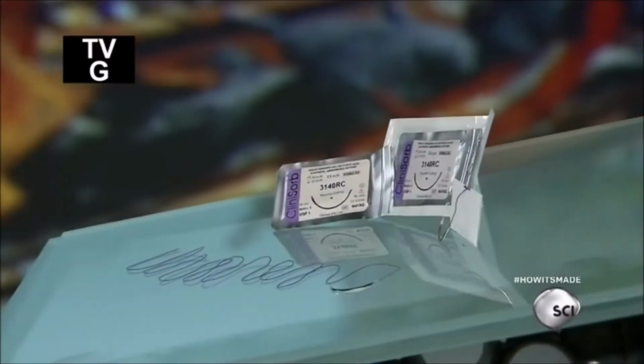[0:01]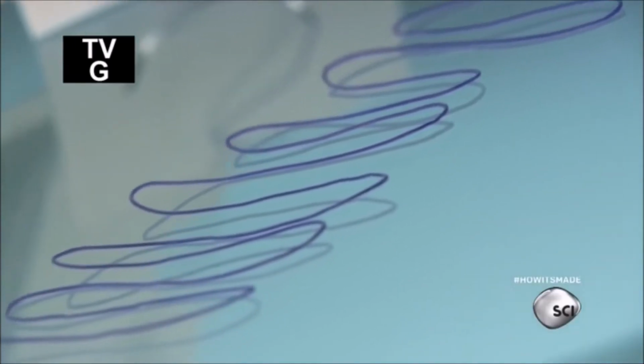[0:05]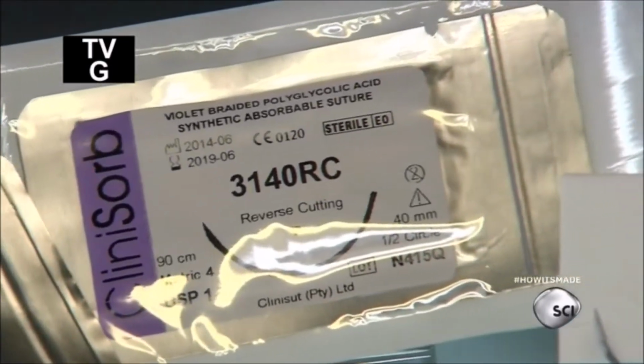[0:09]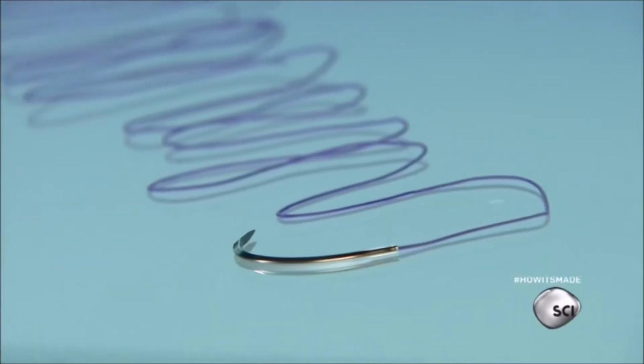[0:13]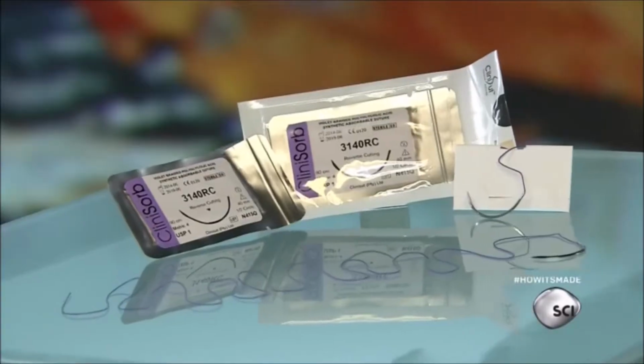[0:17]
Humans have been performing surgery for over 7,000 years, but the use of surgical sutures is fairly recent. Ancient Greek surgeons were thought to be the first. They used gut strings to mend the wounds of gladiators over 2,000 years ago.
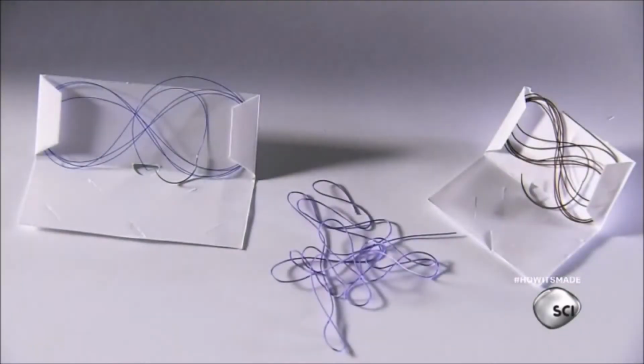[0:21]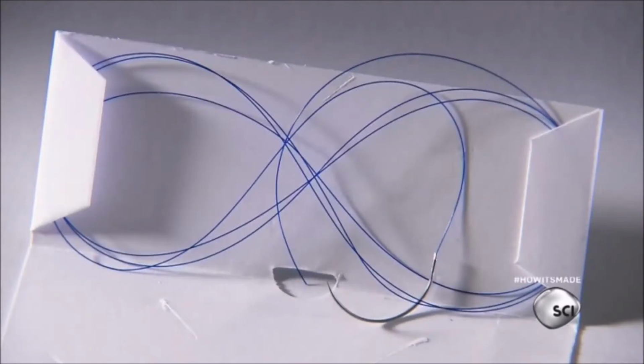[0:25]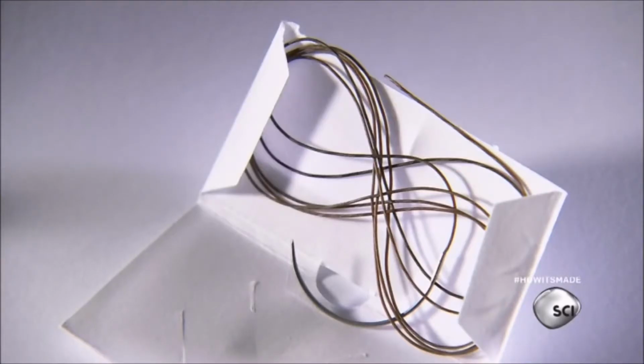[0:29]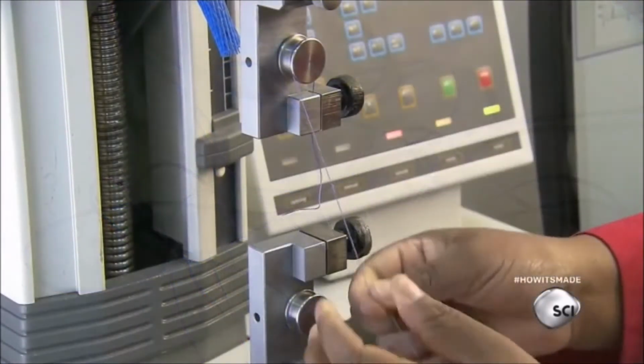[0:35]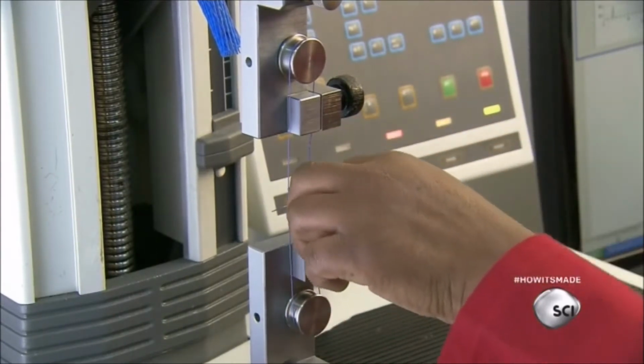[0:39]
Today's medical sutures come in different forms, such as synthetic monofilament threads, natural collagen fibers, or braided synthetic threads. A technician sets a tension meter to check the quality of the raw materials. The machine applies tension on the knot to measure the force needed to break it.
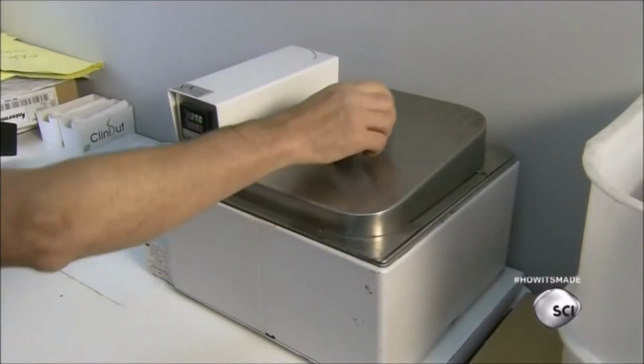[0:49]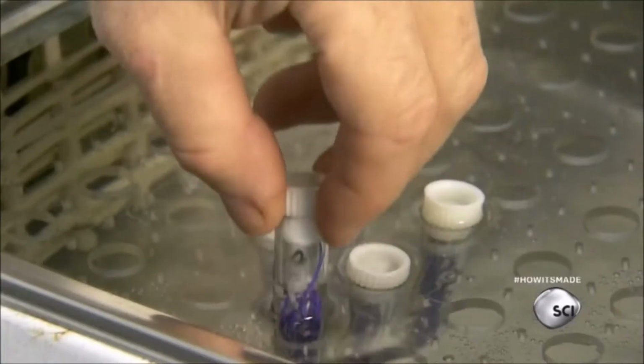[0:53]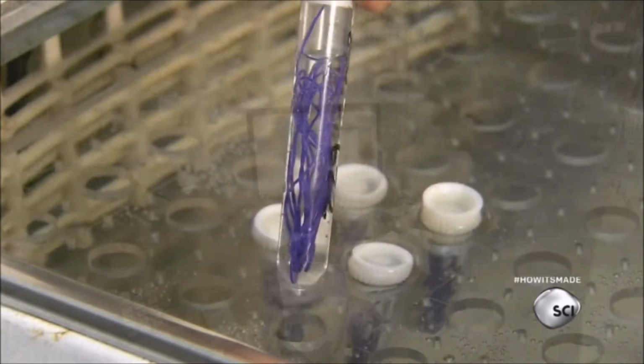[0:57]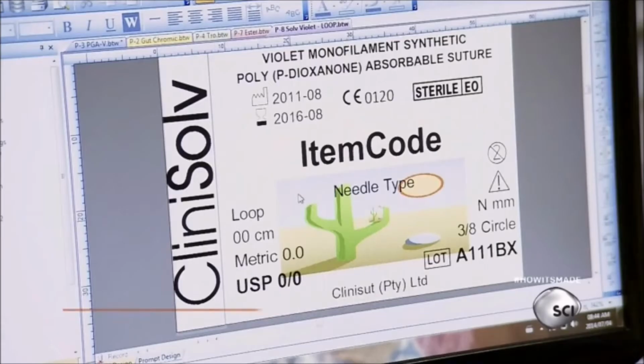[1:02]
A worker tests the material's absorption process in a heated bath. This simulates the temperature and moisture of the human body. A technician enters the product's medical specifications and prints out a batch of labels.
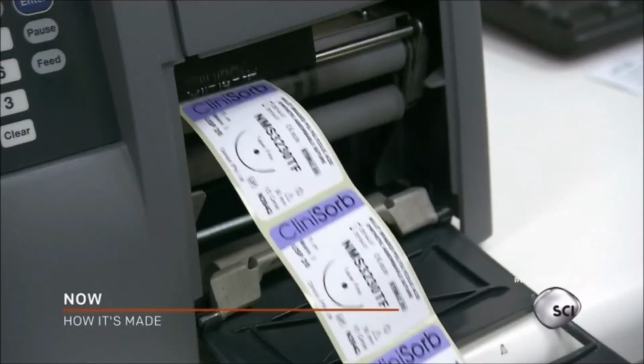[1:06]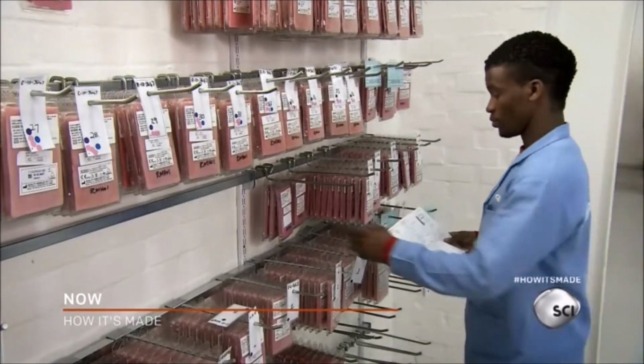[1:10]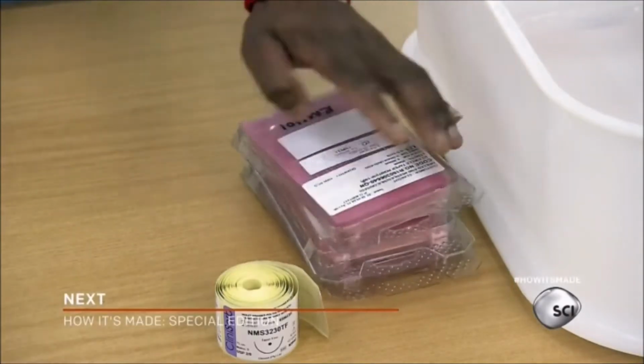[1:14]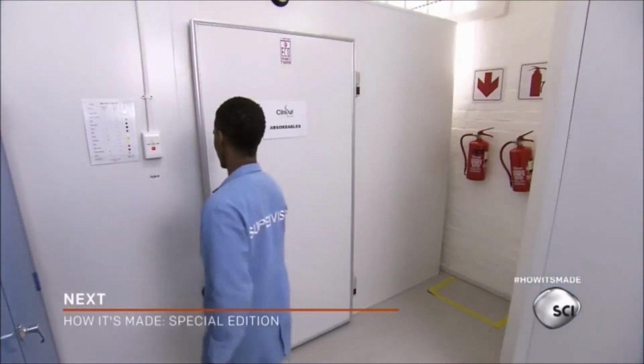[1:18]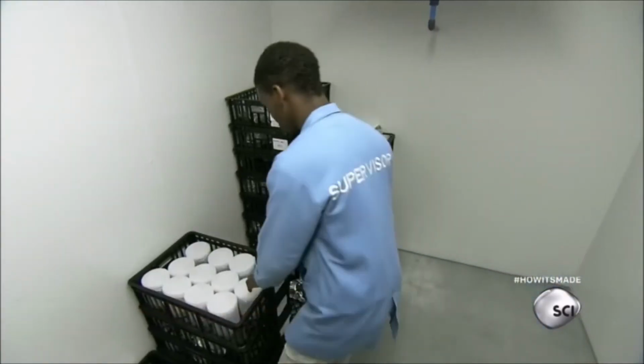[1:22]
Then, a supervisor selects needles and places them on a table. He retrieves spools of thread from a refrigerated room. To preserve the thread, it's been stored in sealed containers.
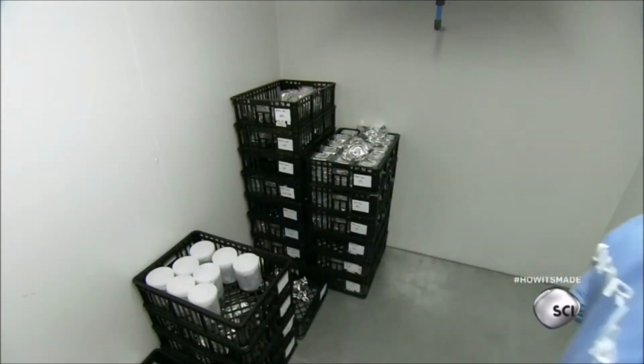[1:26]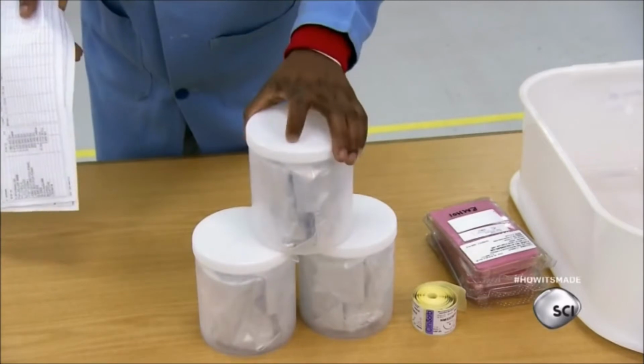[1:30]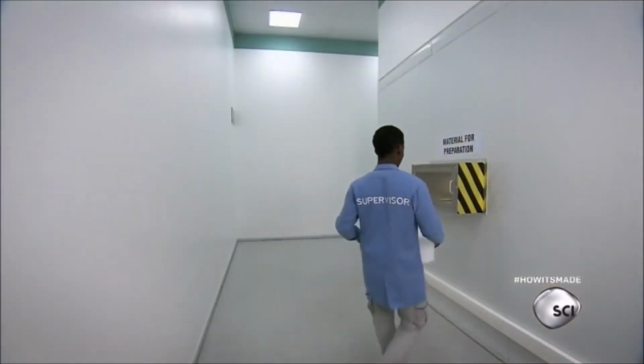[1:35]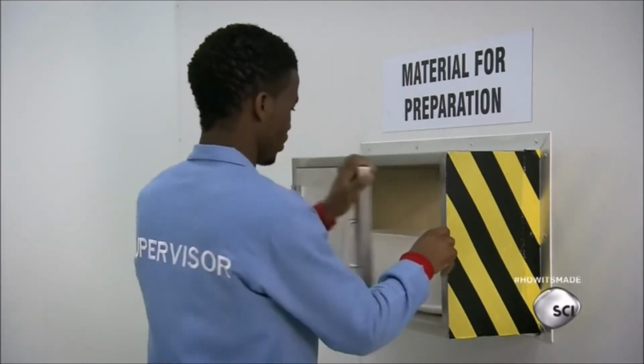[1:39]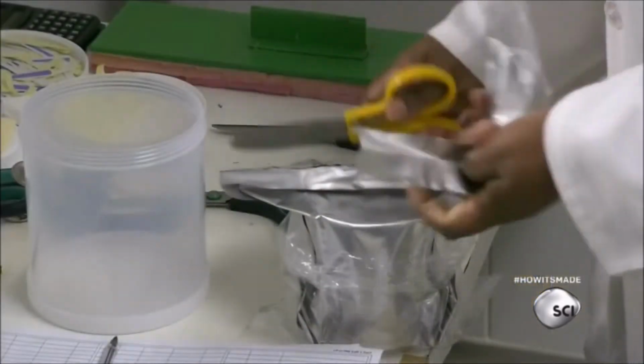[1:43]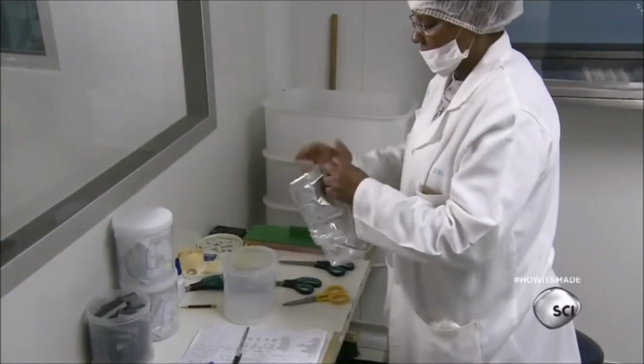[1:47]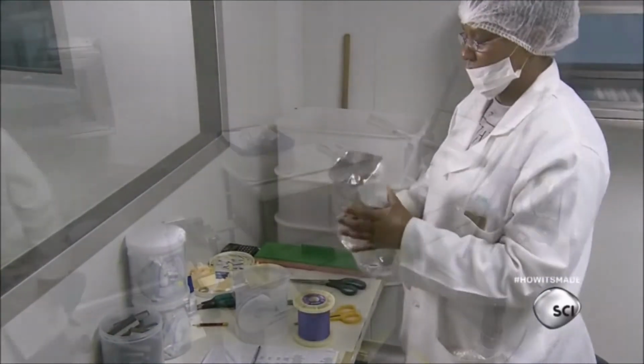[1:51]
The supervisor gathers all the materials and brings them to the material preparation department. The supplies are passed through an airlock to maintain the department's positive pressure environment. On the other side, a technician opens the airtight foil and removes the thread spool. She threads the spool in a custom-made winding and cutting machine.
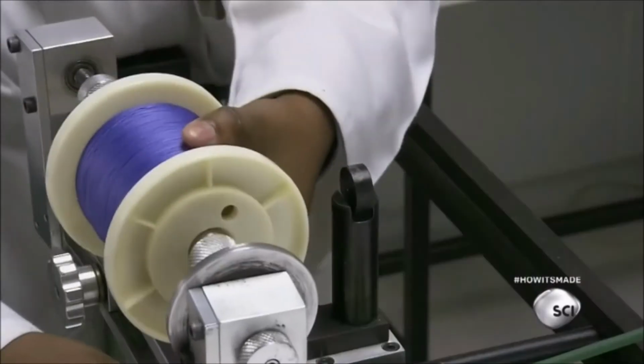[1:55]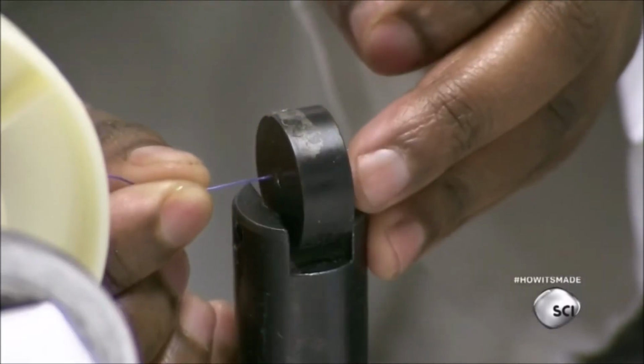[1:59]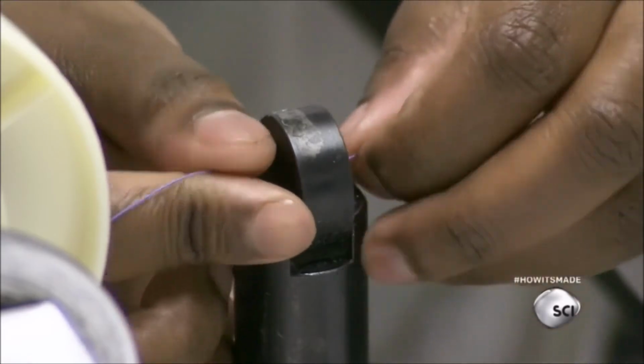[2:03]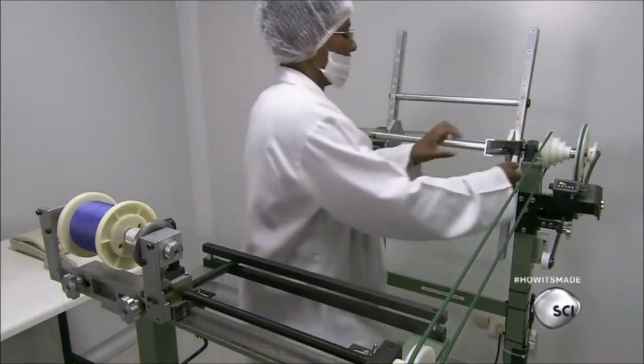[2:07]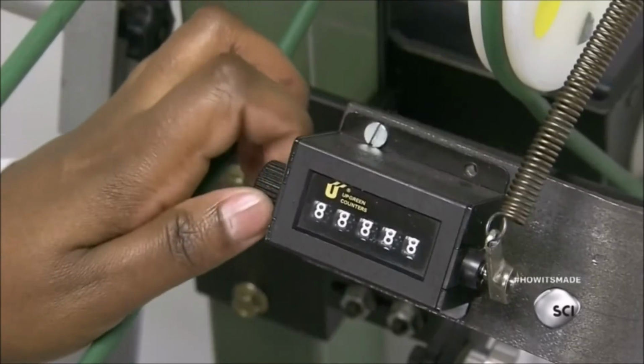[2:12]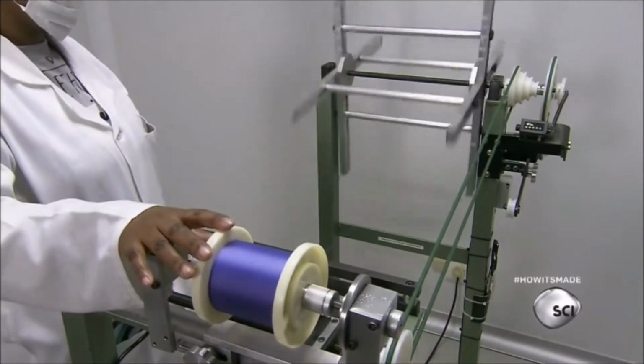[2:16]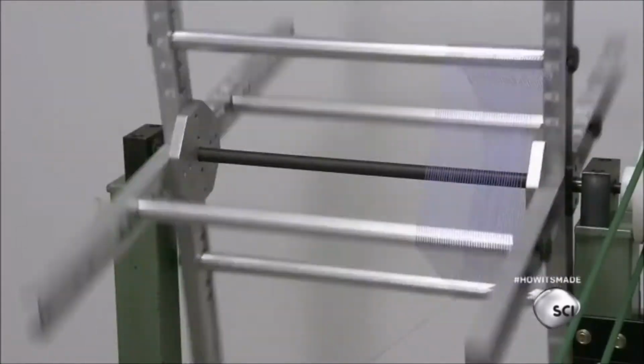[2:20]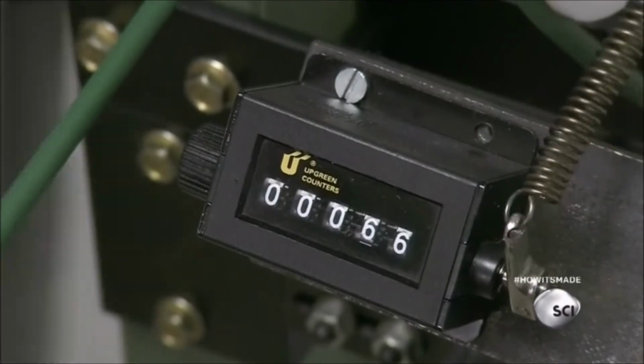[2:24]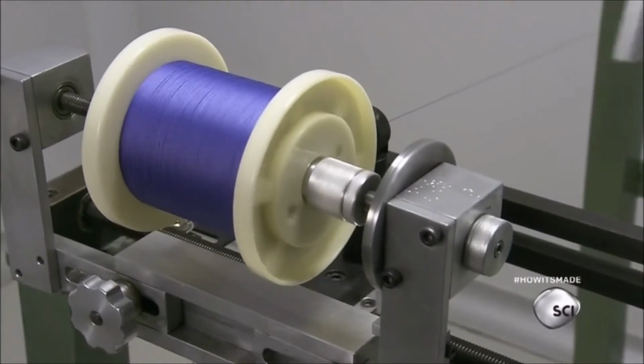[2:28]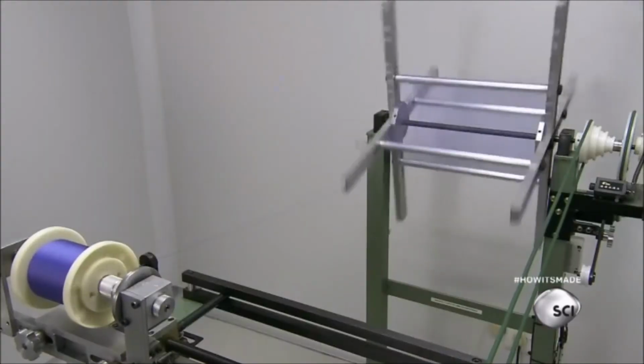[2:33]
The technician sets the mechanical thread counter back to zero and starts the winder. It can wind threads that are up to 100 inches. The counter tracks the number of windings as the machine unspools the thread. The machine stops automatically once the winding is complete.
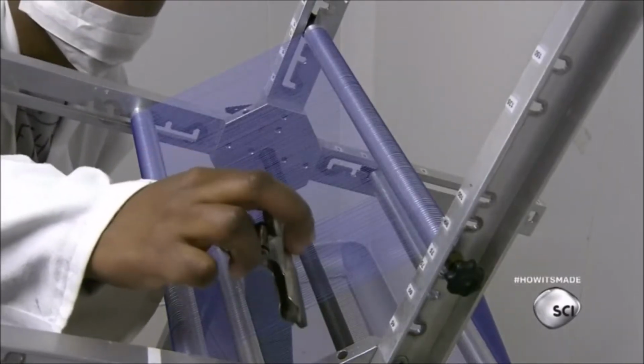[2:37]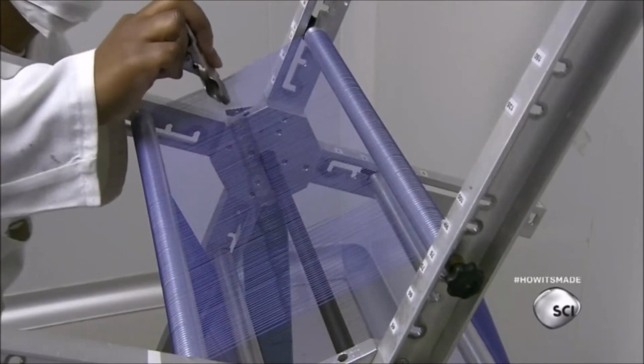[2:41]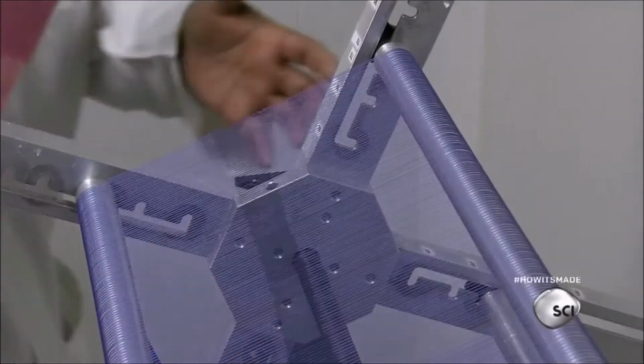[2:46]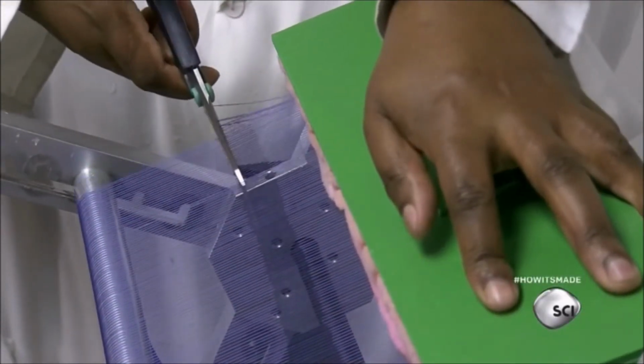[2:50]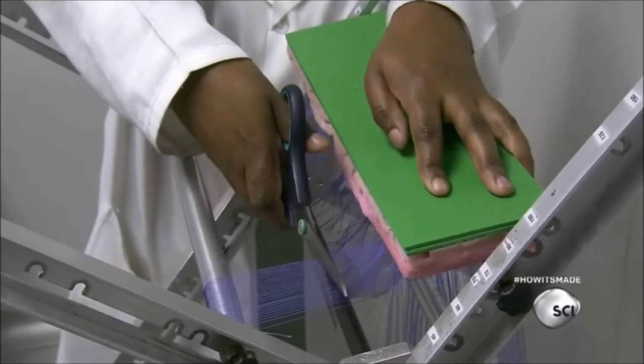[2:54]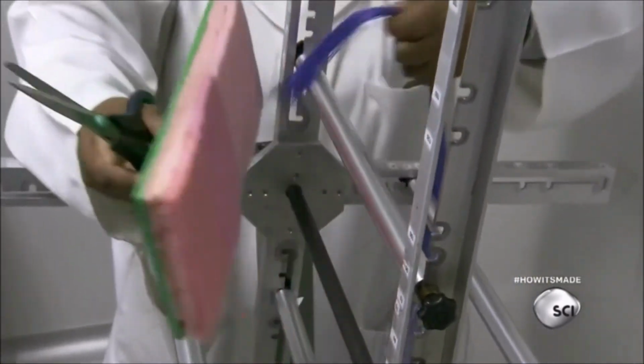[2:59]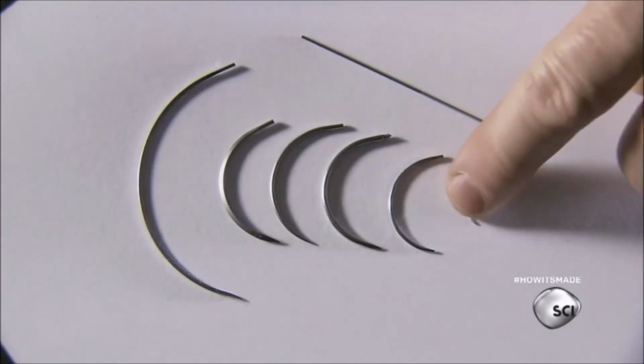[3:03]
The technician applies medical grade glue to stiffen the ends of the braided threads before cutting them. She places a guide to hold the threads in place while she cuts them along the glue line. Sutures use needles of various shapes and sizes, the smallest ones being 10 millimeters in length.
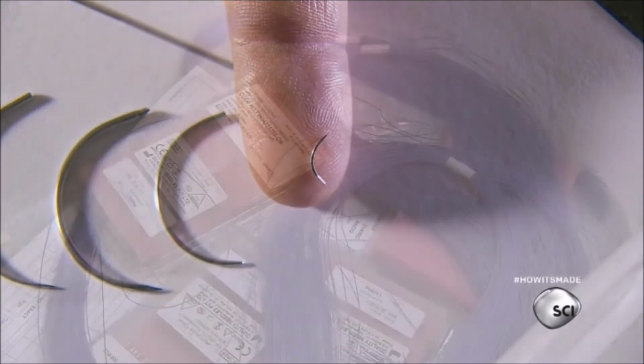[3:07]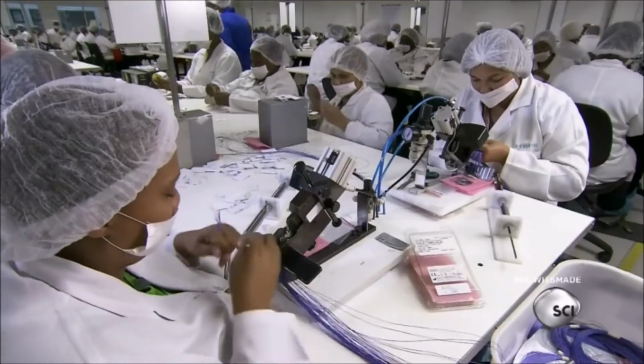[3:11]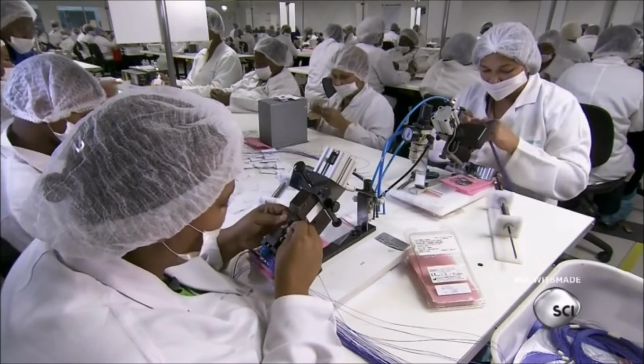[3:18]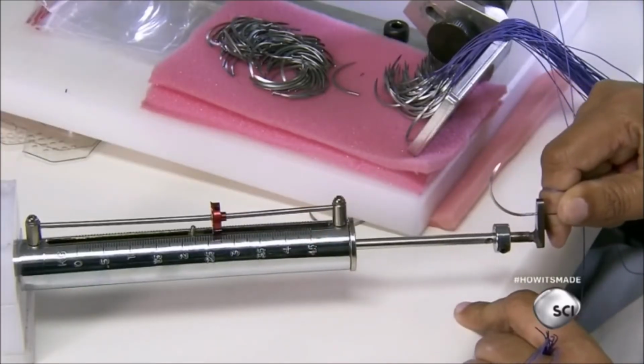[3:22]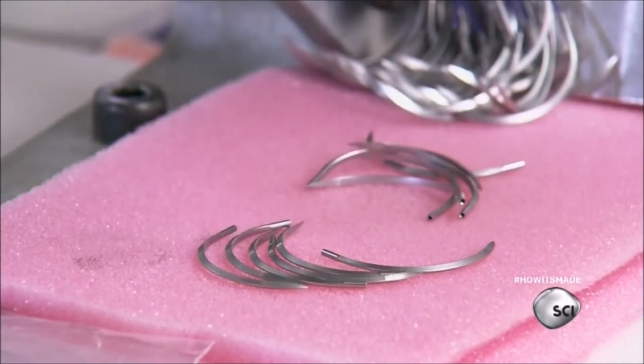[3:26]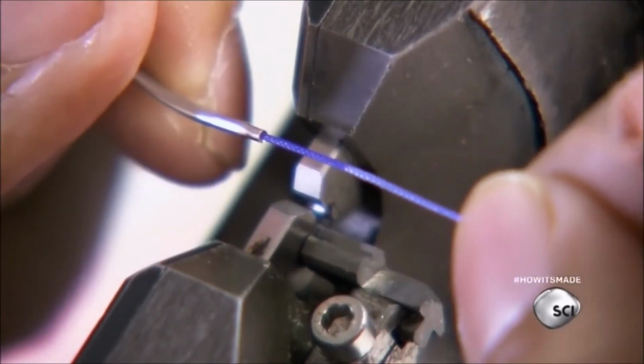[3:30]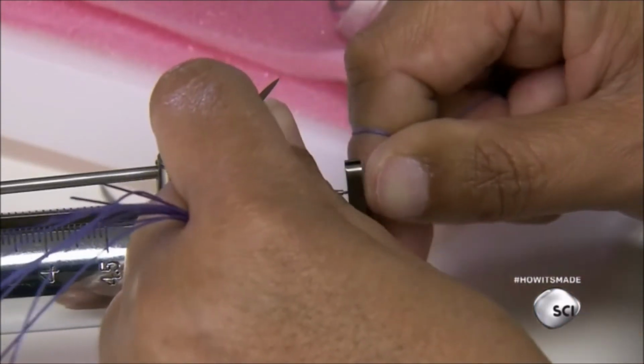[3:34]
On the main production floor, dozens of workers attach needles to the threads. They make sure the attachment meets the sutures requirements. The operator inserts the glue-hardened end of the thread into the back of the needle and crimps it tight with a mechanical swaging machine. Then she hooks the needle into a pull tester to check the strength of each attachment.
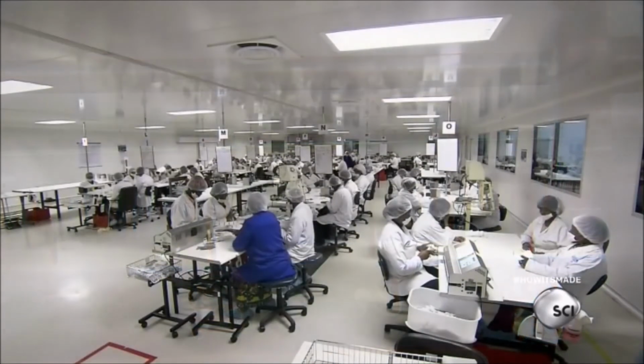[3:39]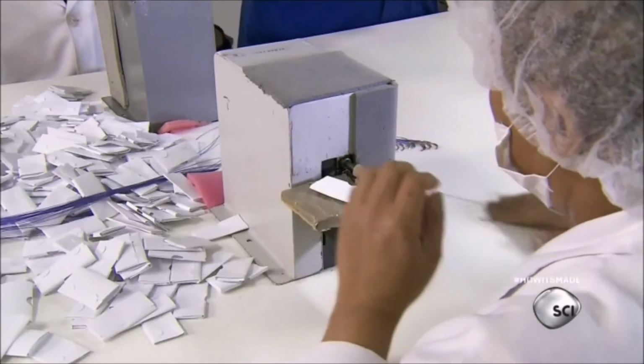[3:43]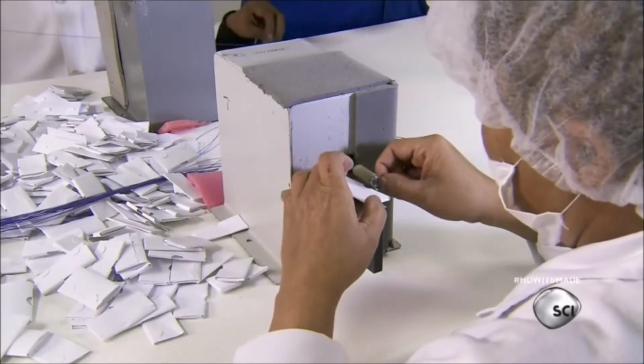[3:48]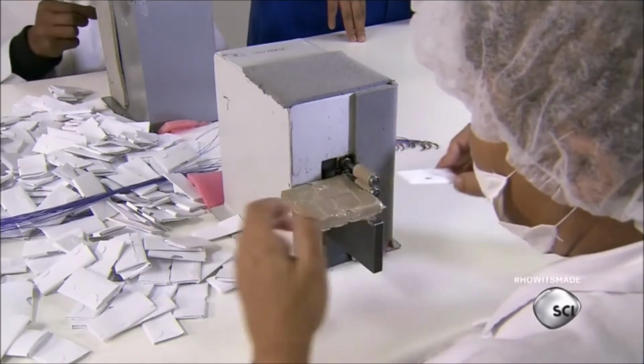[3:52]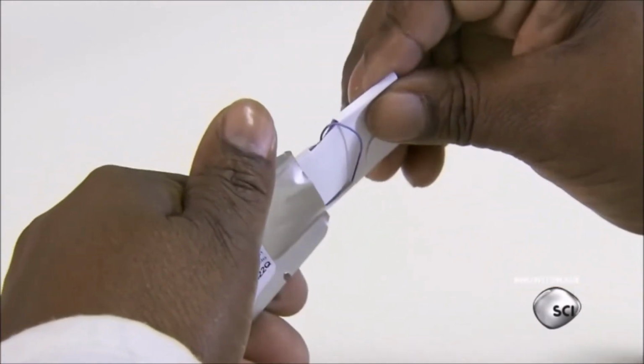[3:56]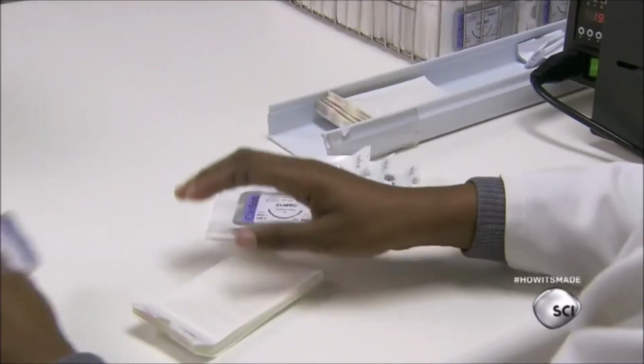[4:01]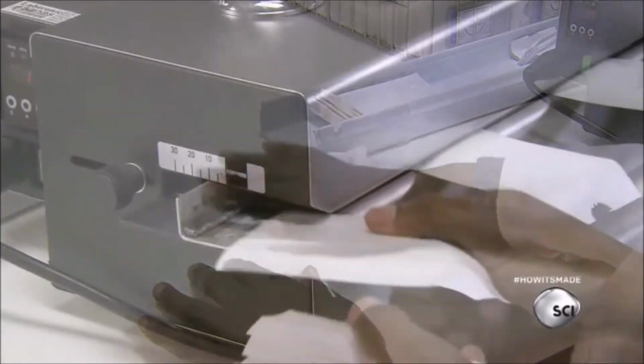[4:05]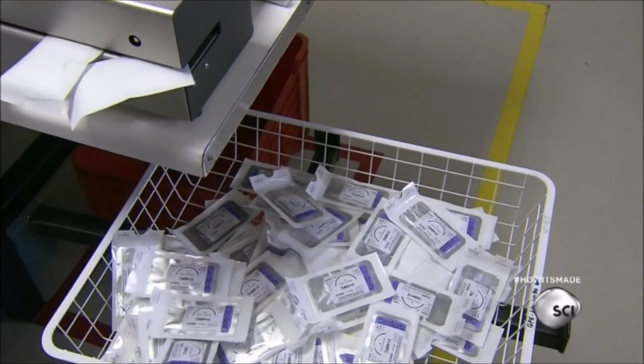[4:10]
Finally, workers wind the assembled sutures into folded holding cards, tucking the needles in for protection. A worker inserts the holding card in a labeled foil pouch. Then he slips it in a second package made of medical paper and polypropylene film, and feeds it into a continuous rotary sealer. The sealed packages drop into a production holding basket.
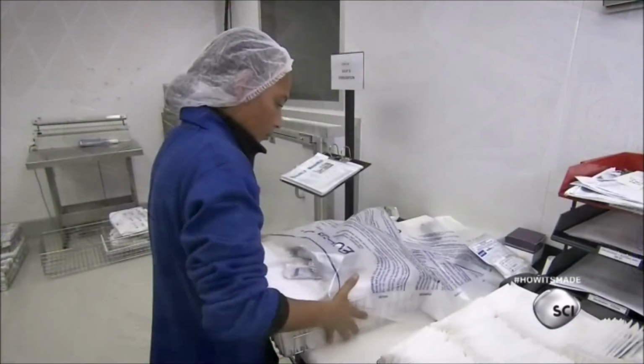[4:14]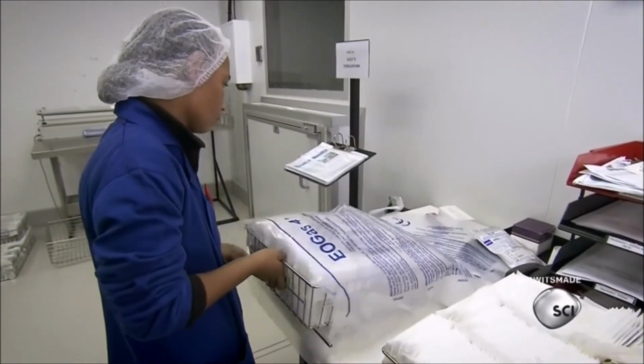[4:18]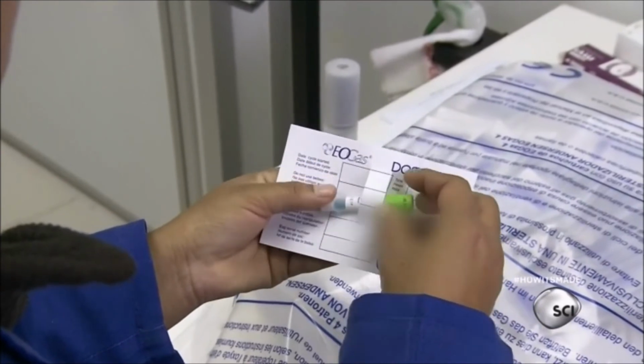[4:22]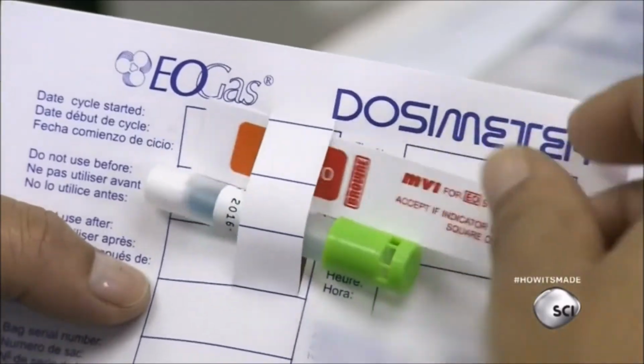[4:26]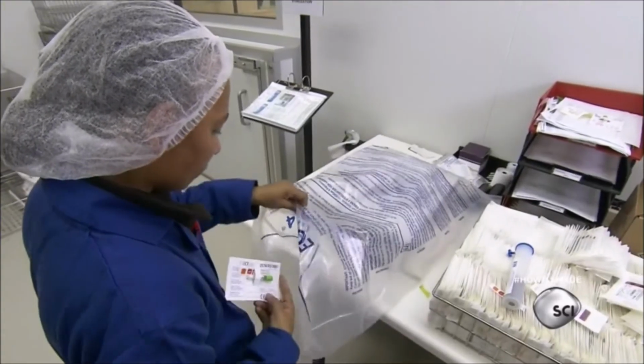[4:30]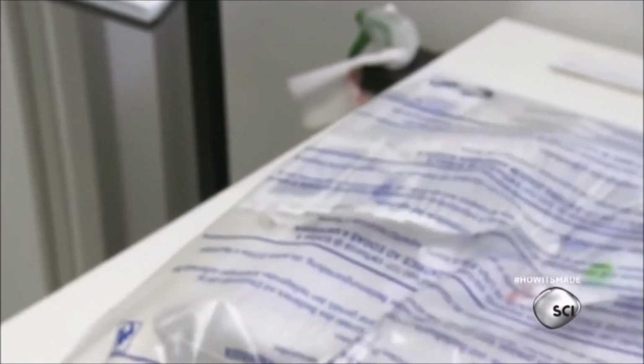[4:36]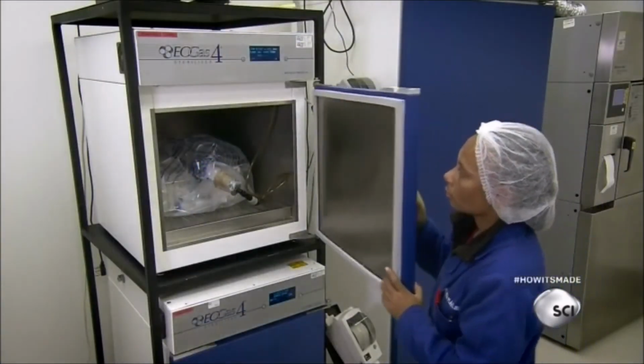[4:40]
The finished product is sent for terminal sterilizing. A worker places the basket into an ethylene oxide or EO gas sterilization bag. She attaches a biological indicator vial and a control strip on a sterilization control card and puts the card inside the bag. She adds an EO gas delayed release canister in the bag and places the sealed bag into the sterilizer.
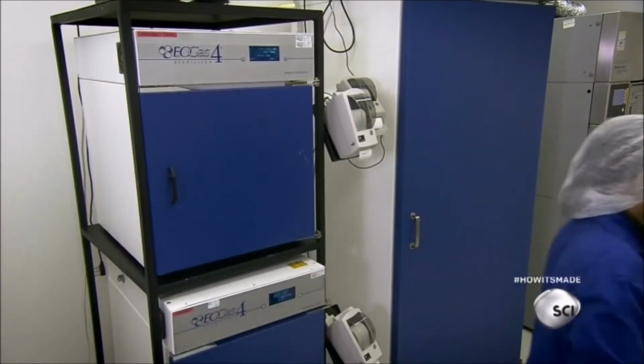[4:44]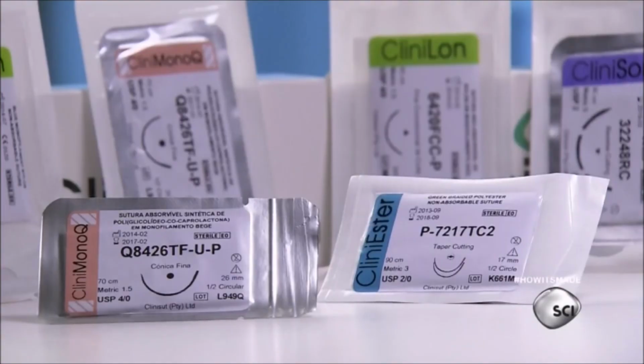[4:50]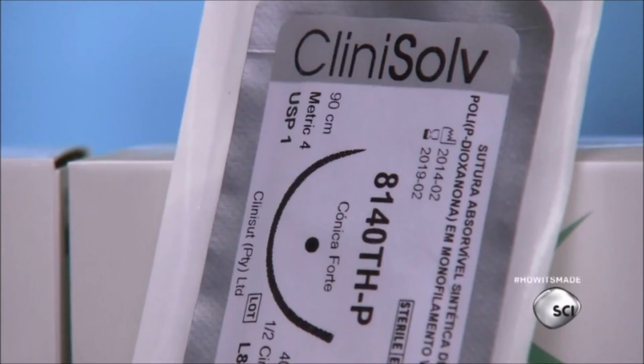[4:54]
Sutures can be used for a variety of procedures, but each product has a very precise application.